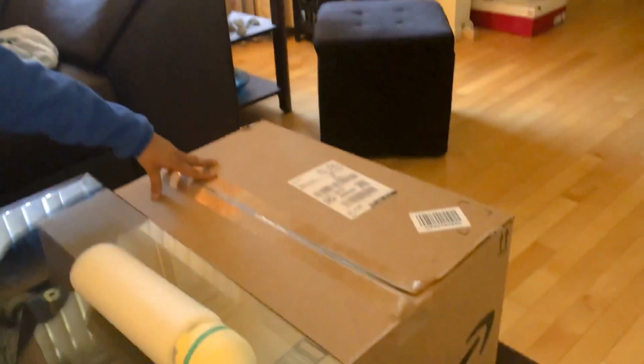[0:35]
The reason why we made this UV sterilization box is because you want to sterilize the face shields so that it's ready for use by the hospital staff or workers, and to just keep these shields generally clean by getting rid of any impurities.
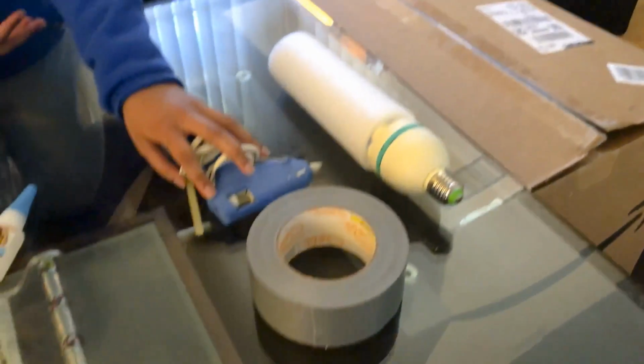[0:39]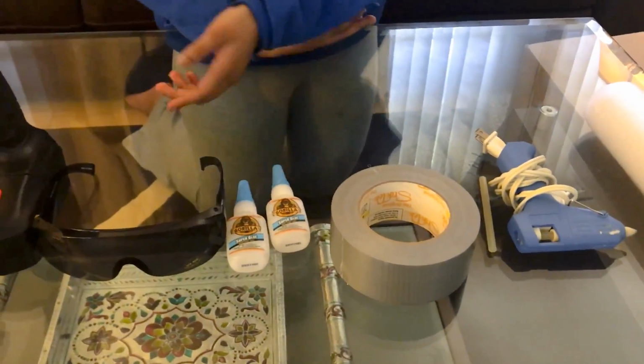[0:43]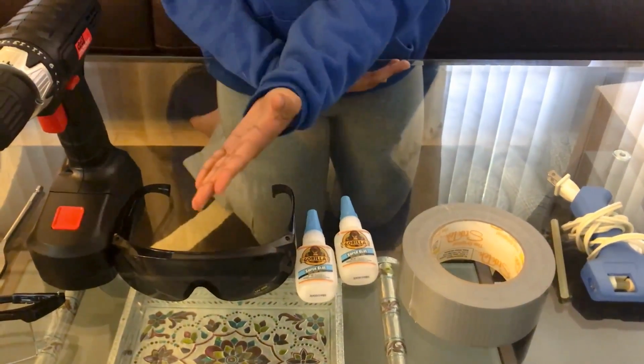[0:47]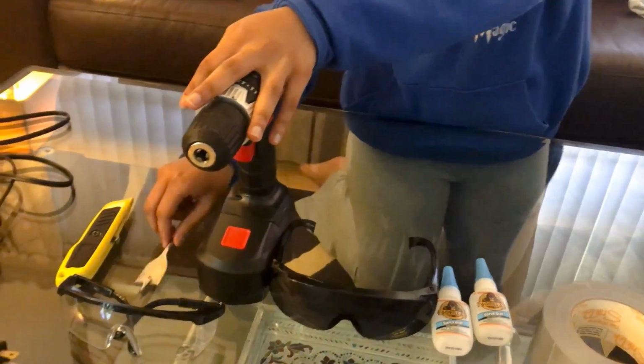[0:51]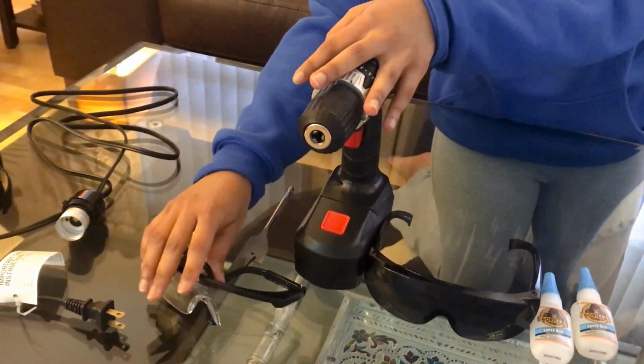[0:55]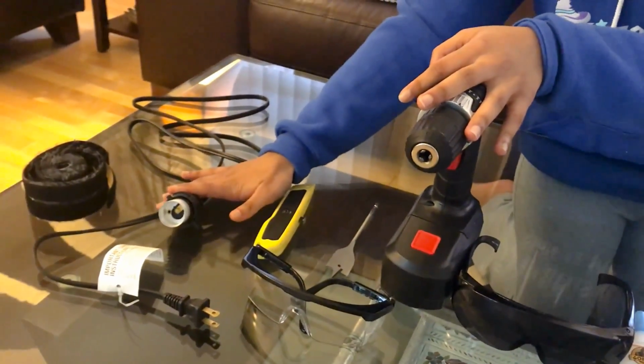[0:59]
The materials you will need for this project are a big cardboard box, a UVC germicidal lamp, a hot glue gun, duct tape, super glue or Gorilla Glue, UV glasses, because when you're working with UV light it is always important to have eye protection, a handheld drill, a 1-inch spade bit, safety glasses because you will be drilling, an X-Acto knife, a light socket to AC adapter, and Velcro.
Some important things to note here are that I am using a 15.5 inch tall, 21.5 inch long, and 18.5 inch wide cardboard box because I calculated the inner surface area of this cardboard box and divided it by the approximate surface area of each face shield plus 1 inch. This box can sterilize 16 shields at one time. If you need to do more shields at a time, then you can get a bigger box and calculate those numbers.
Additionally, the UVC germicidal lamp that I'm using has 36 watts, 253.7 nanometers of wavelength, and covers around 600 square feet. So if you need more square feet covered because you have a bigger box, then find the respective light bulb that's needed for that.
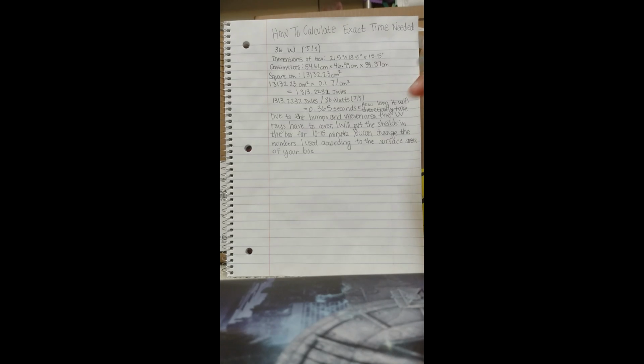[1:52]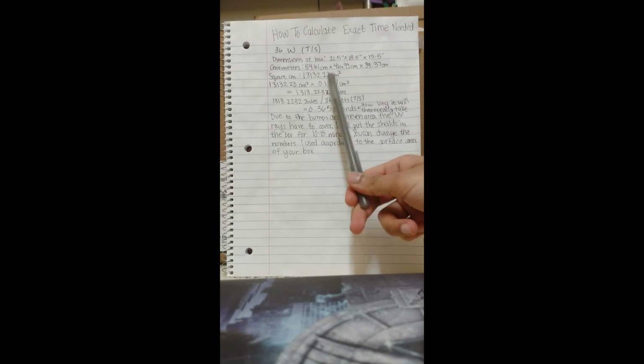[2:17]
Okay, so before we make the calculations for the exact time that we need to leave the face shields inside of the sterilization box, I'm going to go over the information that I do have. I know that my light bulb is 36 watts. I know the dimensions of my box in inches, so I converted it into centimeters, and then I found the surface area of my box, so that gives me my square centimeters.
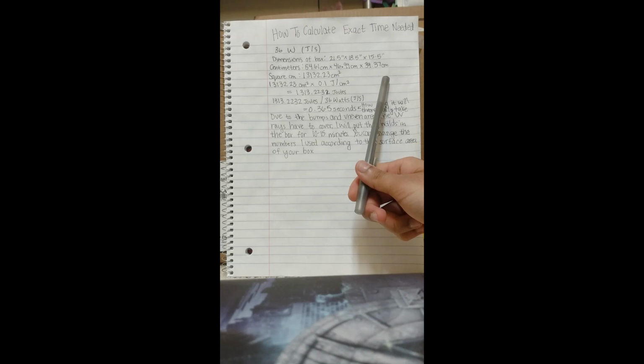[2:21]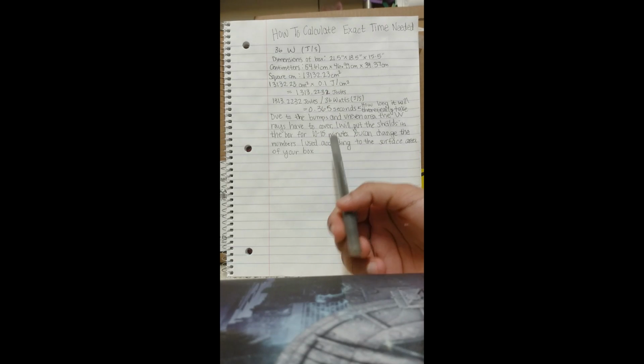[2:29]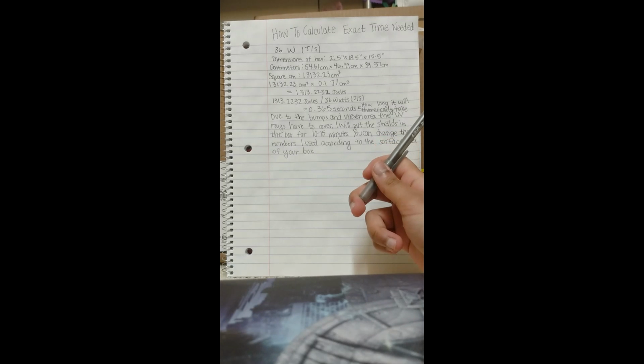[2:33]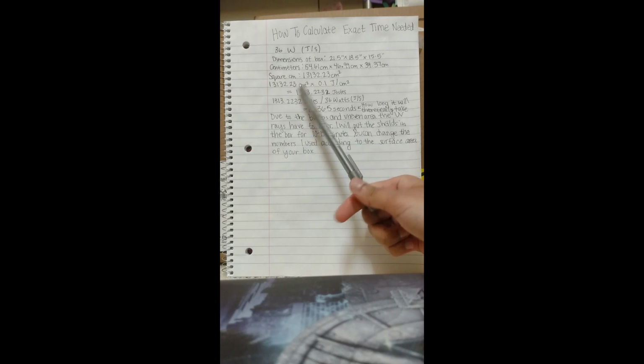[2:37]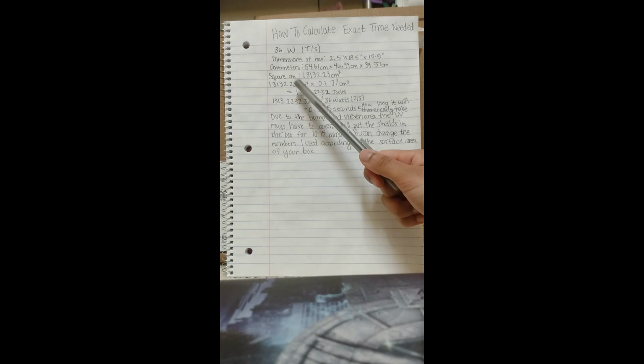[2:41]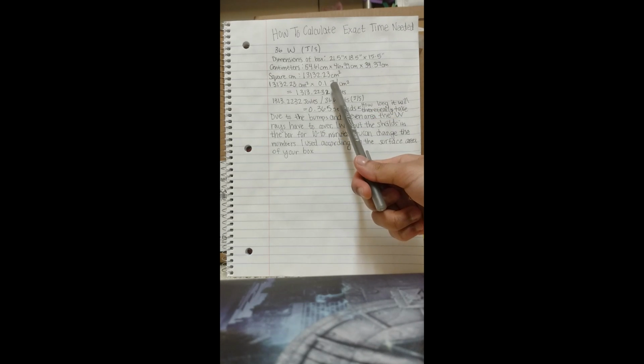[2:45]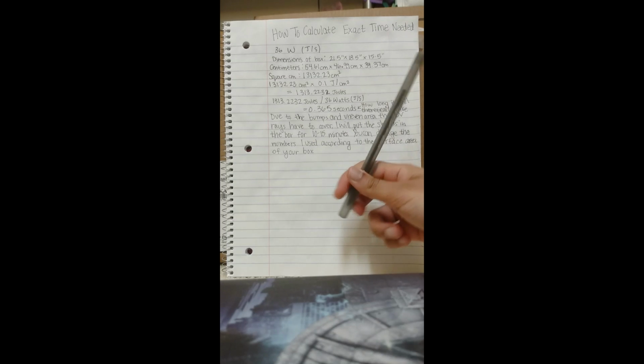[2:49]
In an article that I found, I read that you would need 0.1 joules per centimeter squared in order to get rid of any bacteria, or specifically the coronavirus, which will solve our case of getting rid of any impurities, as I mentioned earlier in the video. So in order to find out how much energy I actually need, I multiply my surface area in centimeters squared times the amount of joules per centimeter squared, and I get the total amount of energy I need.
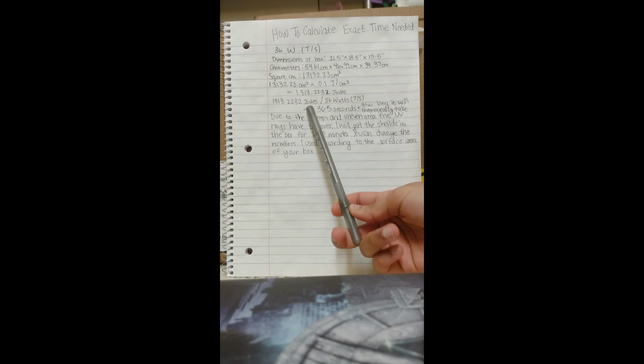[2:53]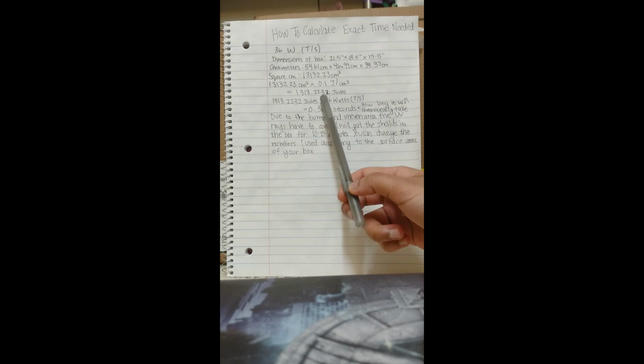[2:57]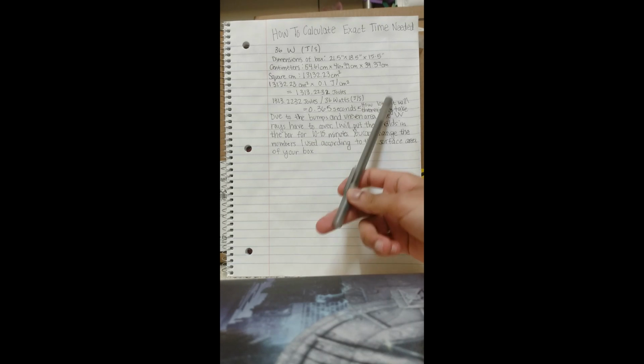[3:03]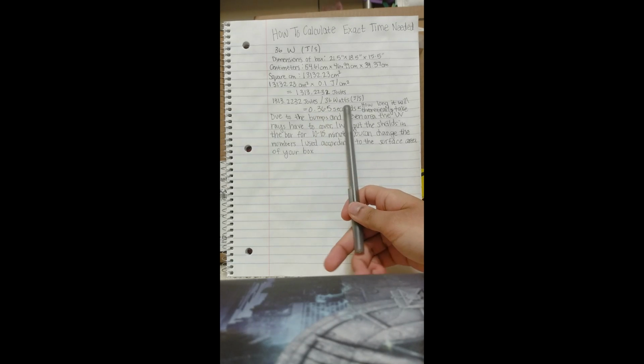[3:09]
Next, I have the total amount of energy I need in joules. I have the power my light bulb has, 36 watts, which is joules per second, which means the joules and joules cancel and give me seconds, which is the time. So doing these calculations, it means that it will take me 0.365 seconds in order for the face shields to be
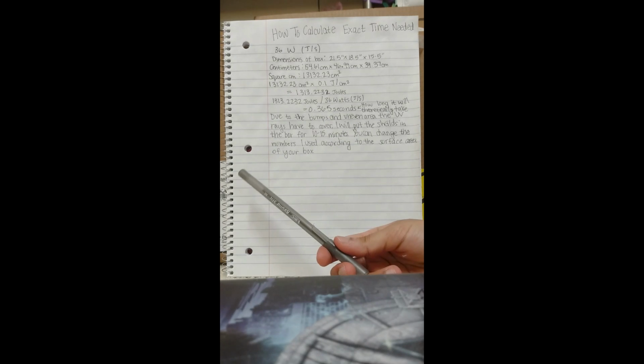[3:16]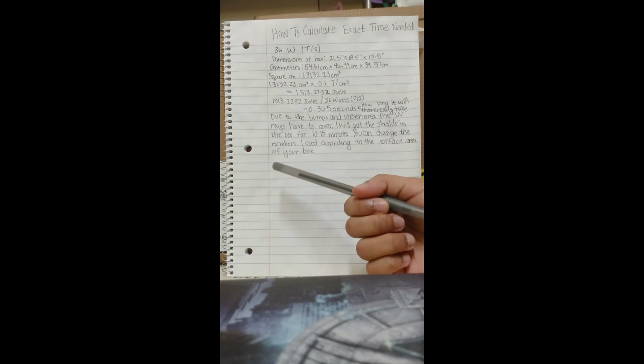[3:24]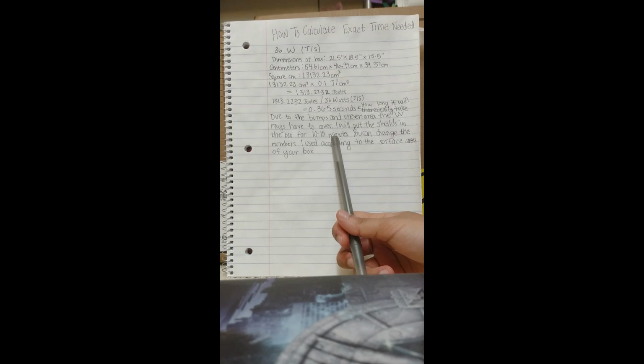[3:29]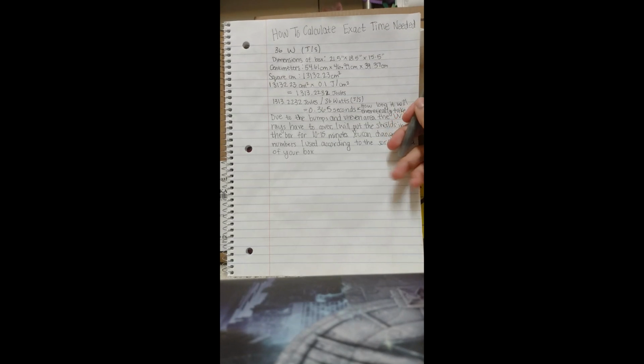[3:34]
completely sterilized. But we have to take into account all the bumps and uneven areas of the face shields, and the plane's just not even since there's 16 face shields in there that need to be taken care of. So I decided that I'd leave the face shields in there for 10 to 15 minutes. You can change the numbers, like the surface area, according to how big your box is, and just find out the exact accurate time for your scenario. But make sure to take into account the uneven area and all of those variables in your situation.
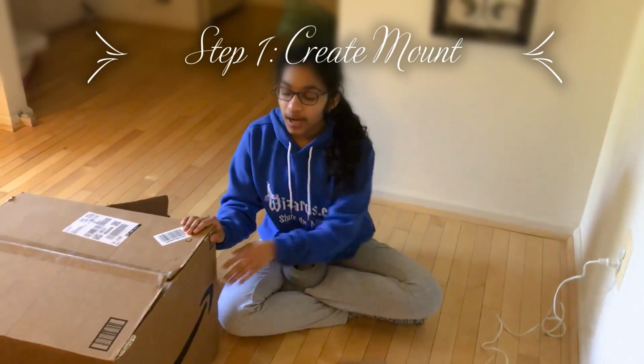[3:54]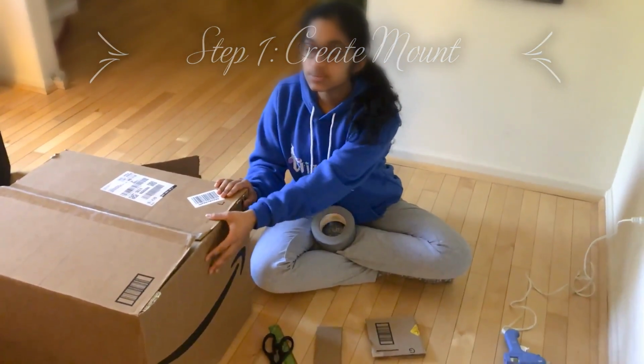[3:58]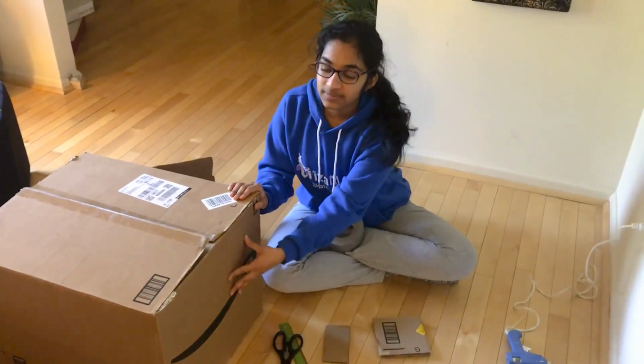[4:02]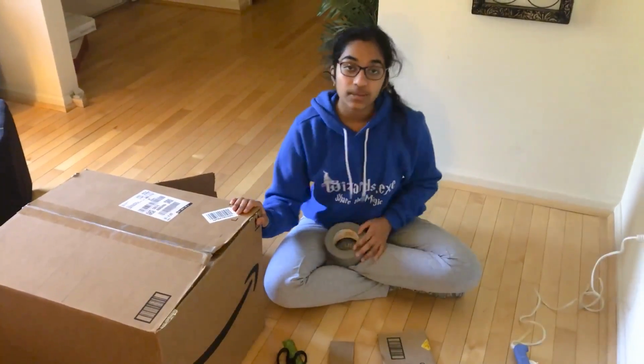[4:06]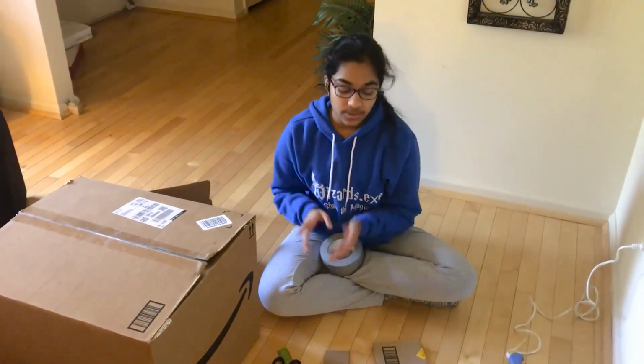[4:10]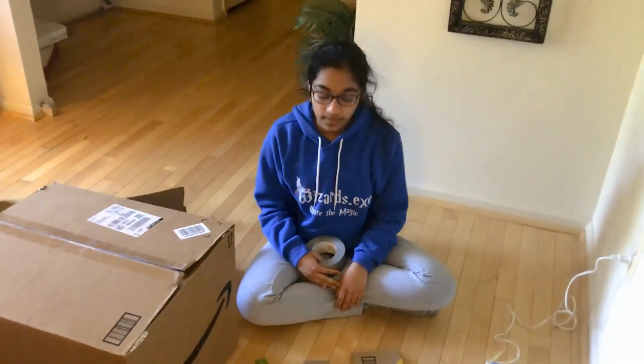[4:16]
For the first step, our goal is to make this side of the box stronger because this will be the mount for the UVC germicidal lamp, and it's kind of flimsy. So in order to make this stronger, we will be gluing pieces of cardboard together to create the buffer or wall for this mount. If you have a cardboard box or pieces of cardboard lying around, that will be particularly helpful.
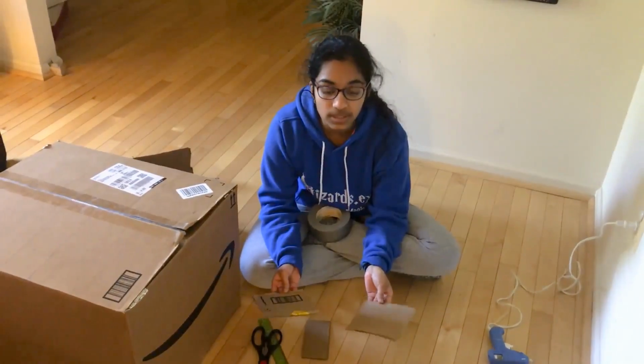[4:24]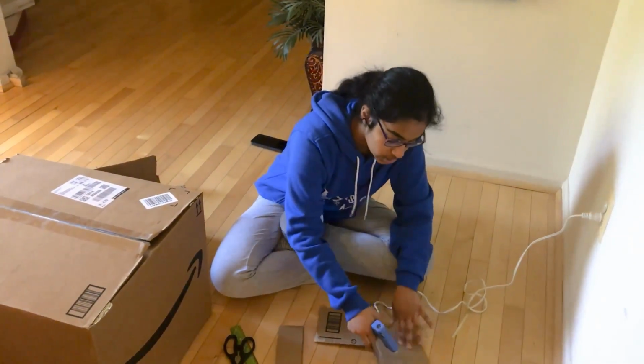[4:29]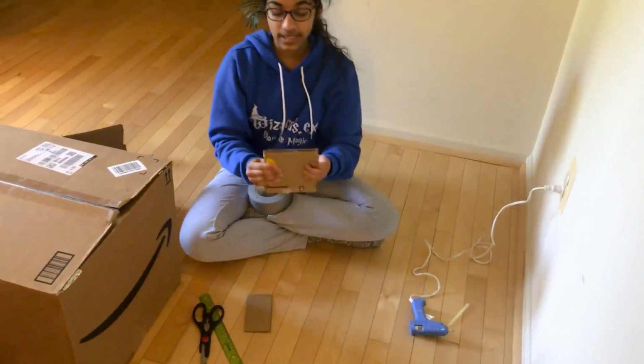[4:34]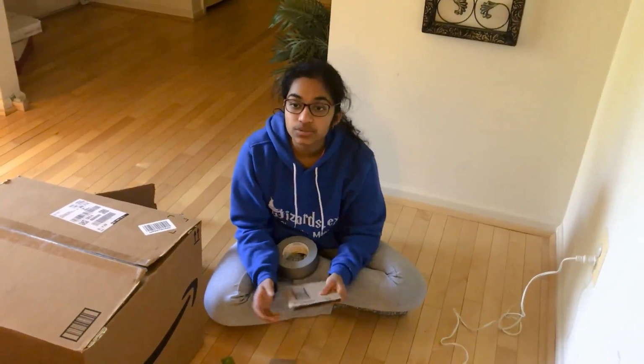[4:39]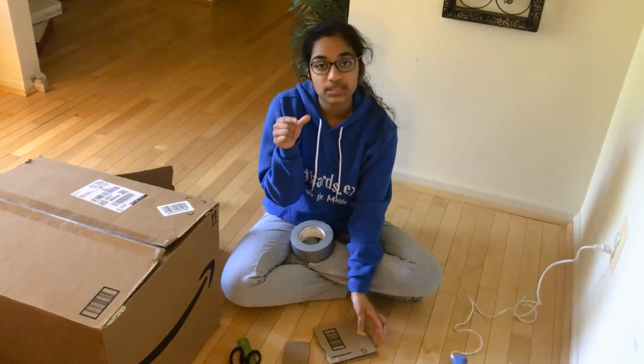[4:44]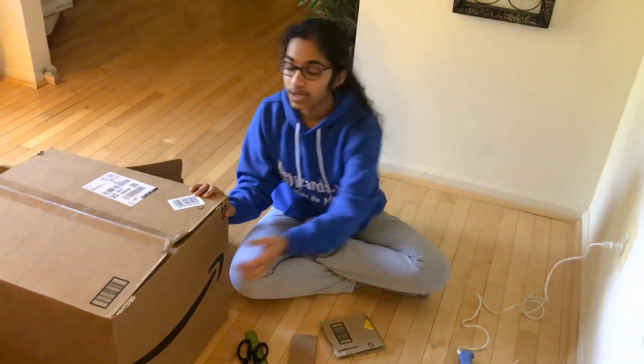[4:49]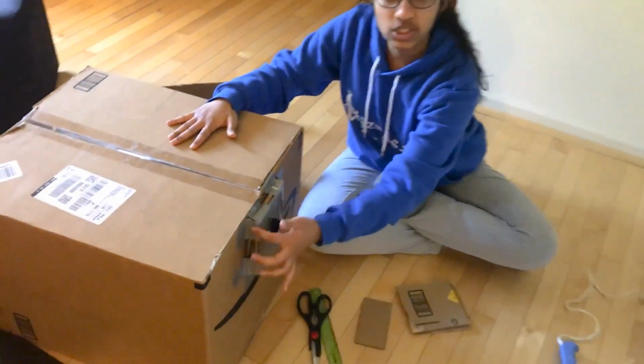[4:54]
The first step is to cut 5-inch by 5-inch squares of the cardboard, and you will need two of them. And then you hot glue these two pieces together. This is one part of your buffer slash wall. I want you to repeat this step maybe 6 or 7 times so that you get an approximately 1-inch thick wall of these pieces of cardboard stuck together. I've already done this, so it looks like this. It's about 1 inch thick.
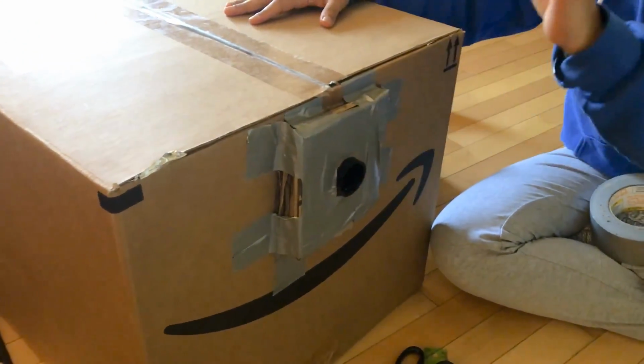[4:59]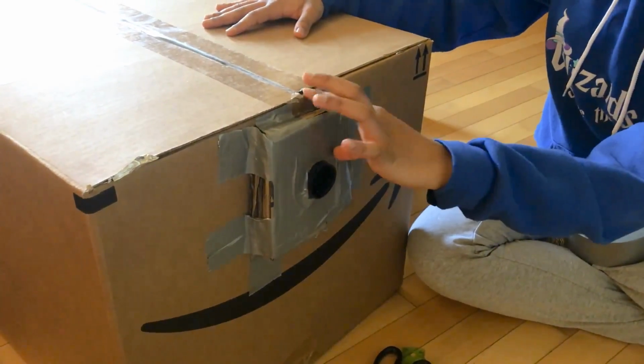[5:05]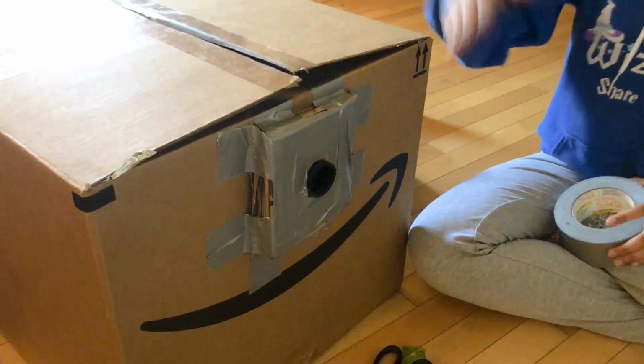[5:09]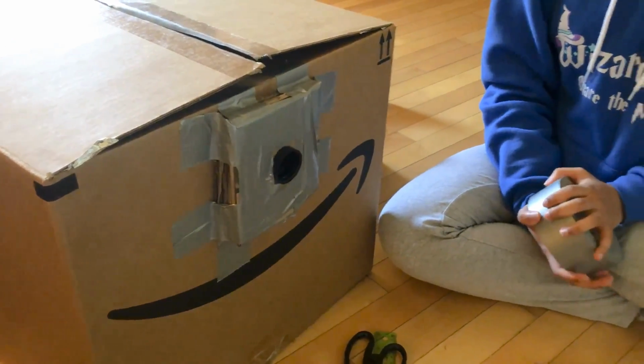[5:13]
And when you're done with that, glue the wall or bundle of cardboard onto the cardboard box at about 2 inches away from the top of the box. And then take duct tape, 2 pieces horizontally and 2 pieces vertically, to ensure that it will stick on this box so that it'll be ready for step 2.
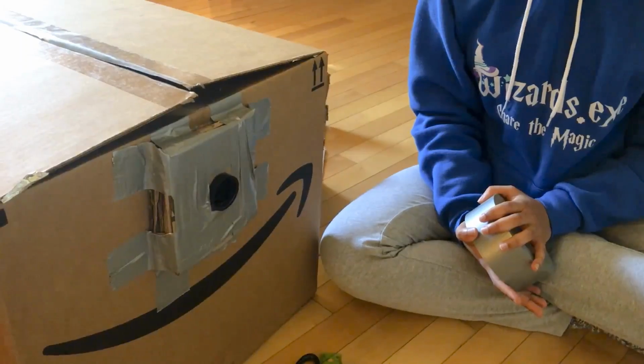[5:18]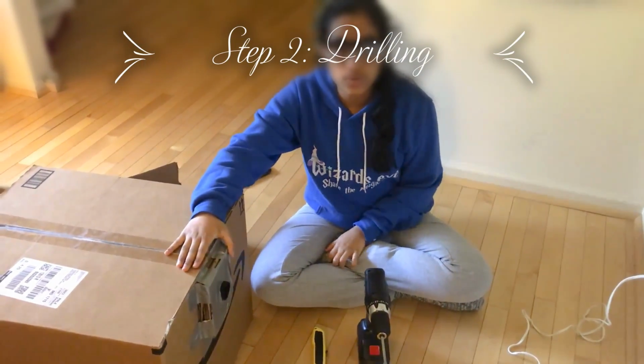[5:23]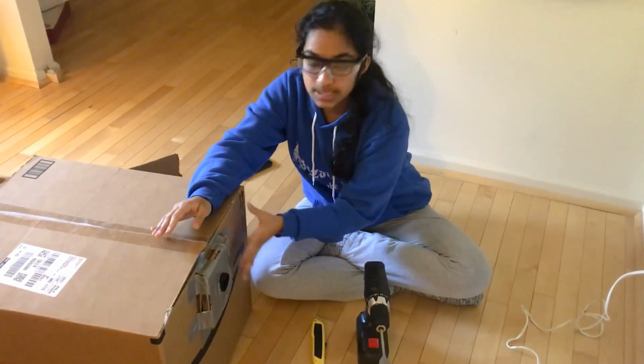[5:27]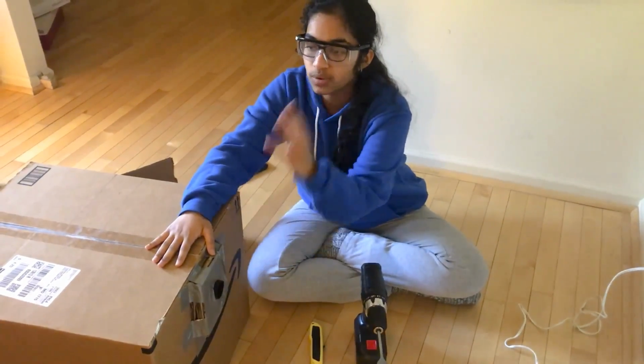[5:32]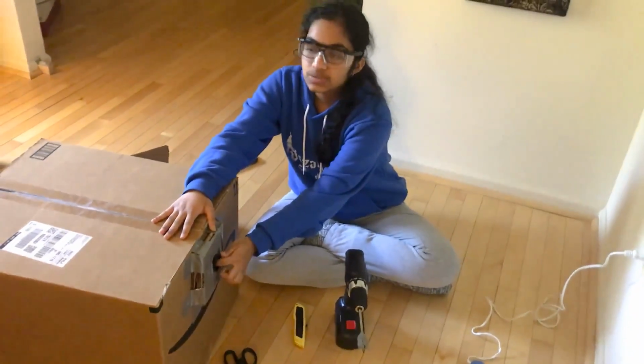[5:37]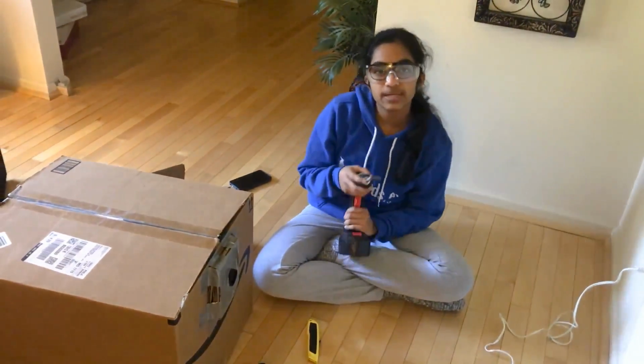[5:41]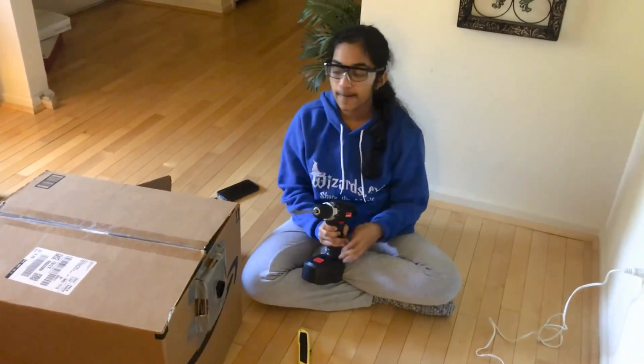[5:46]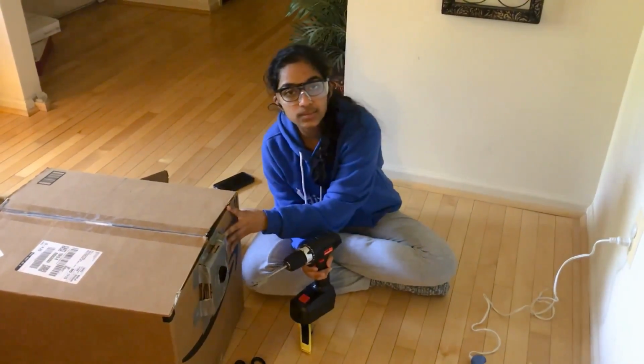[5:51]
Okay, so for this next step, we will be drilling a hole through all of the cardboard wall that you built and this wall of the cardboard box, because this will essentially give you the hole where you will be putting the cover of the light bulb adapter into, and this will basically be the mount for your light bulb. So you need to put your safety bit into your drill. Do not forget to wear your safety goggles, that's very important. And then you drill a hole into the cardboard and the wall of the cardboard box.
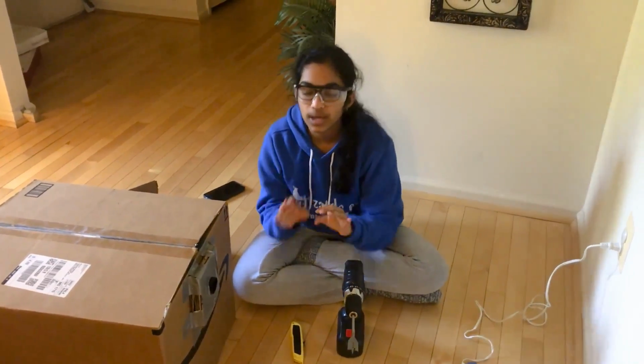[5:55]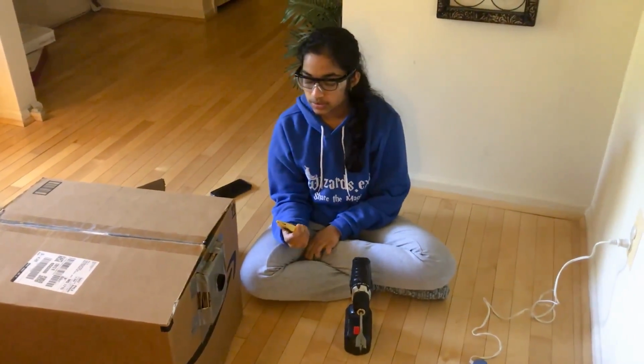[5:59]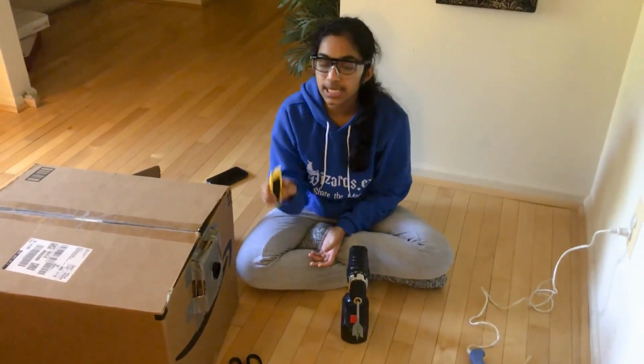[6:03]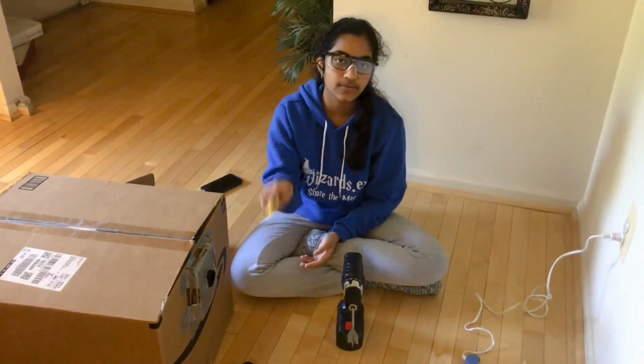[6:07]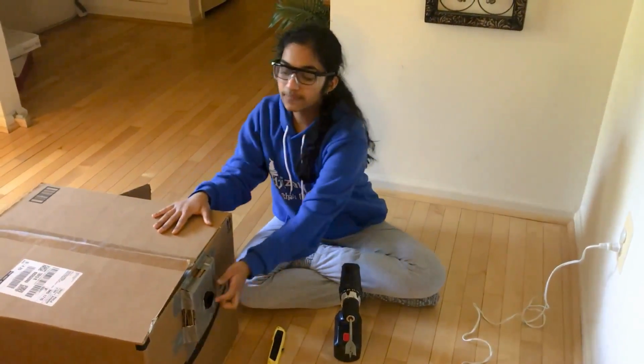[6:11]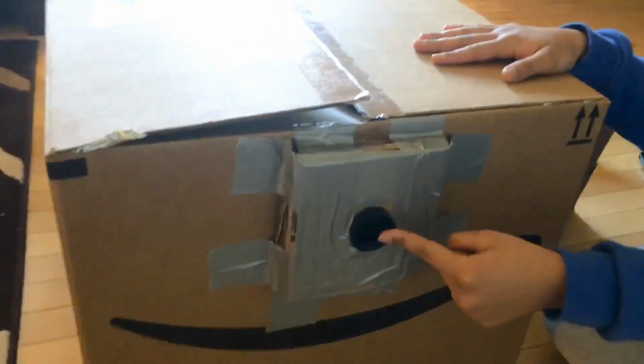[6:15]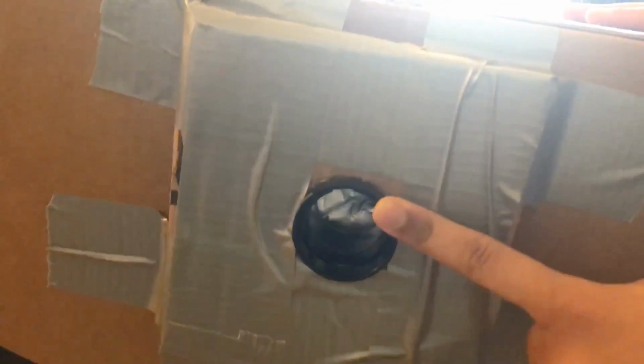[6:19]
It took me about half an hour to get a good size hole. And then you can use an X-Acto knife, or if you have a file, that would be better, to shave away at the outer edges of the circle that you drilled, because you want the cover of that light bulb adapter to fit snugly into the circle, as I have done here already. So I will see you in the next step once you've accomplished this.
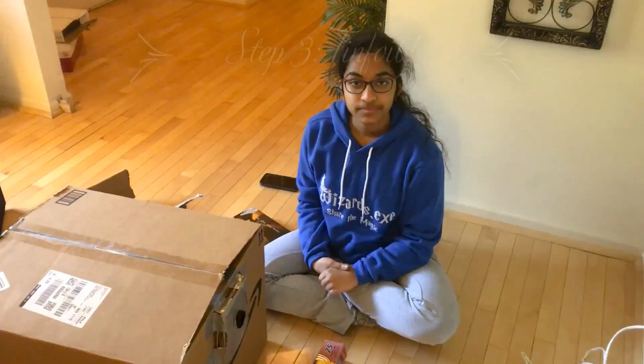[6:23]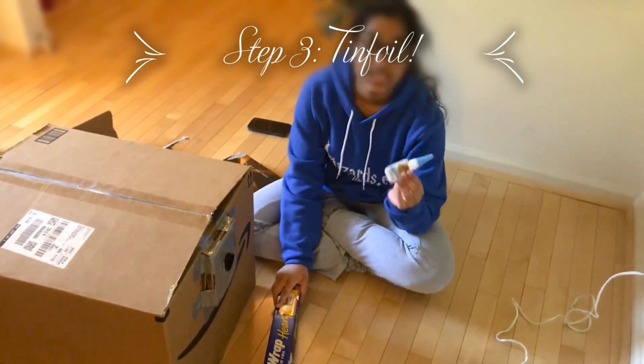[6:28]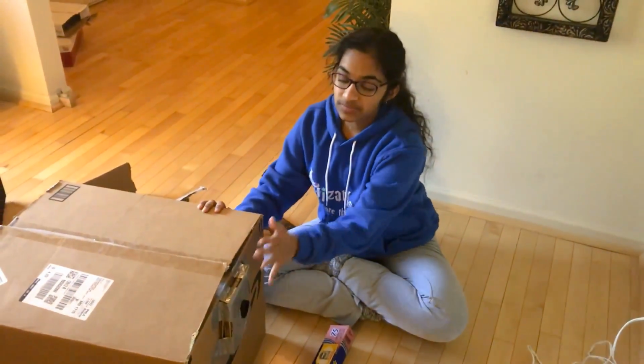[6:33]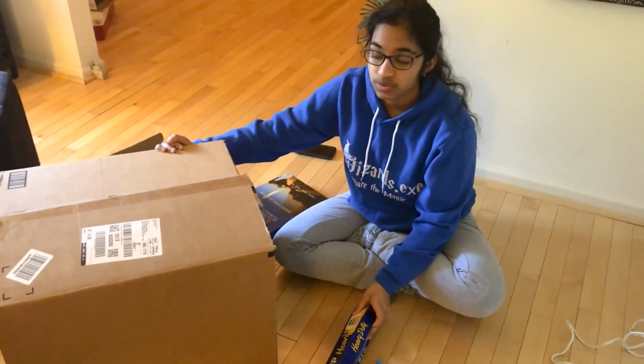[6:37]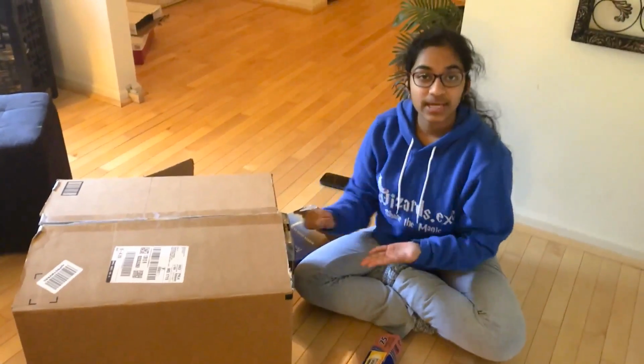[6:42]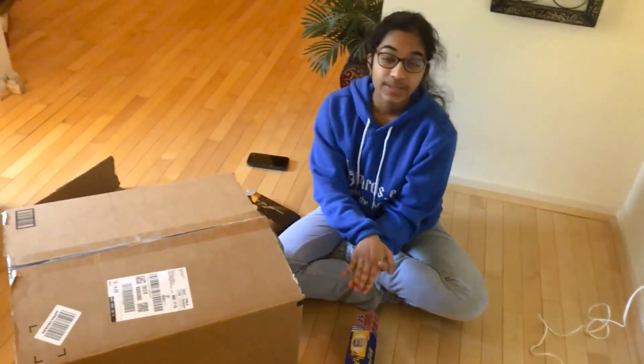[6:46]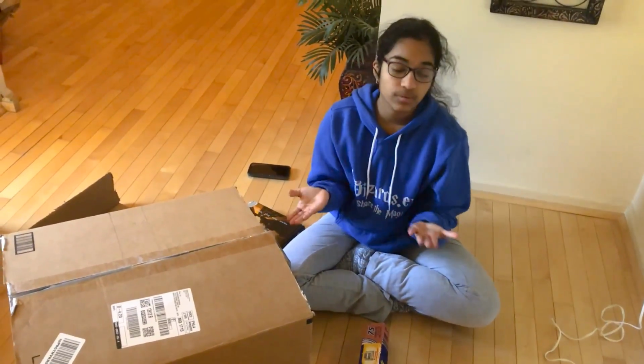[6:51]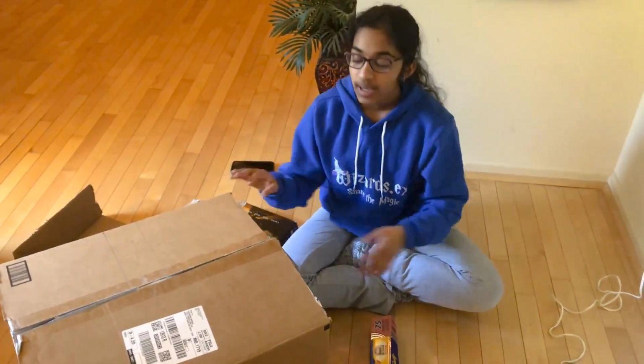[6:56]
Okay, so for this step, you will be needing tin foil and super glue. What you want to do is measure each of these sides and cut the respective length of tin foil that you need. And then using super glue, make sure to put even layers so that when you put the textbook on to ensure that the tin foil will stick, it doesn't have weird bumps on it. Then the reflection of the light from the UV lamp will work a lot better.
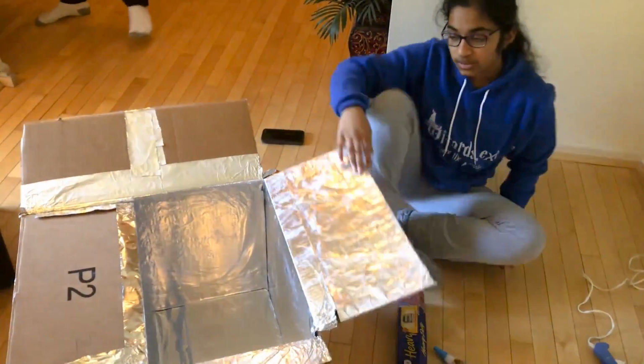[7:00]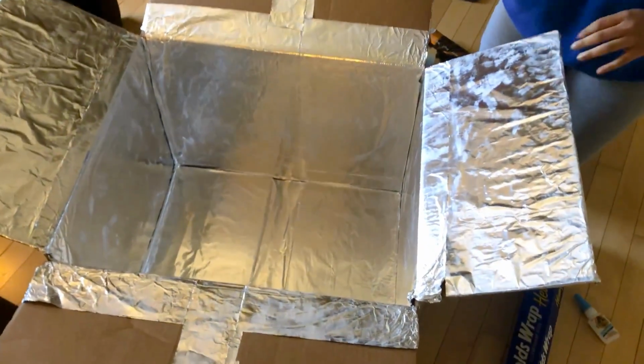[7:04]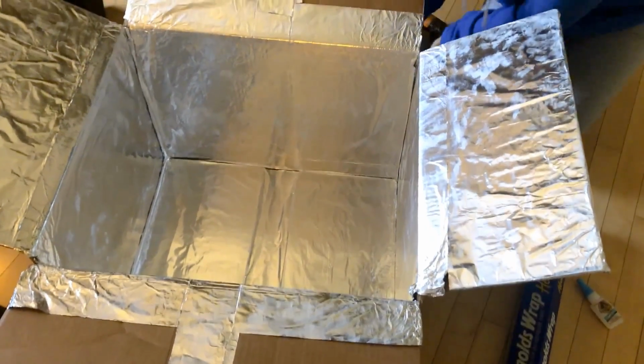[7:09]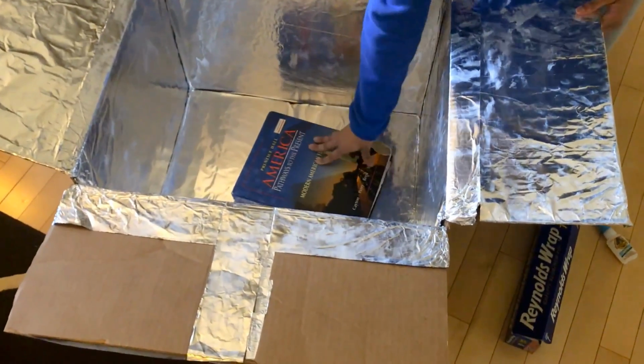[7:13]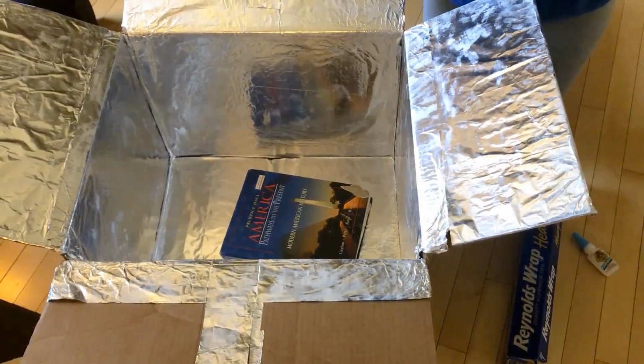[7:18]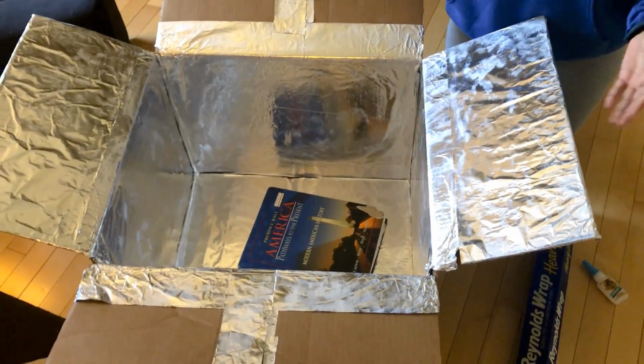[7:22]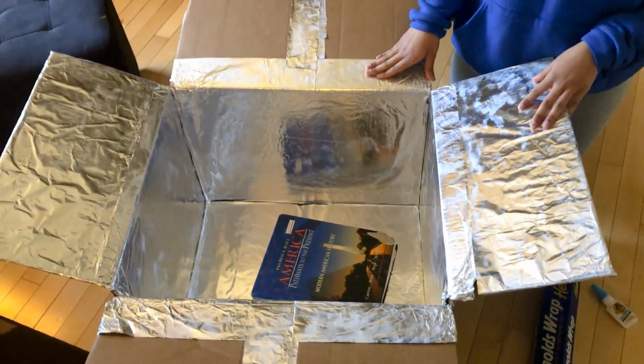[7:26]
So after you've done that, I've actually completed the whole box. This process took me about 90 minutes to do, but once you stick the tin foil down with super glue, you want to put a textbook on it for about 5 minutes to ensure that the glue and the tin foil will actually stick onto the cardboard box really well. Do this process every single time.
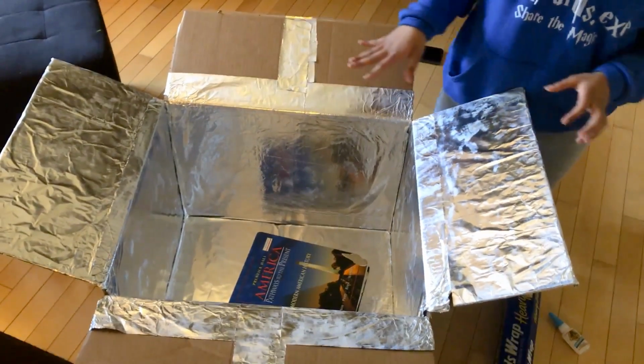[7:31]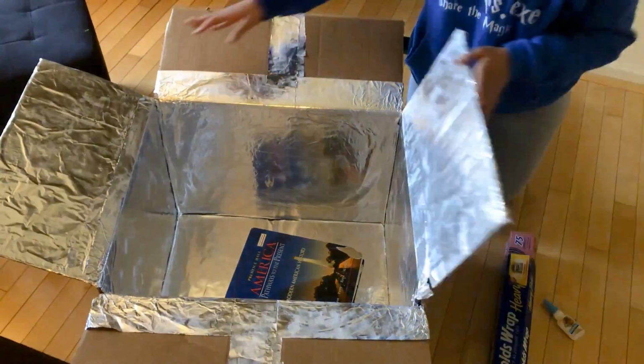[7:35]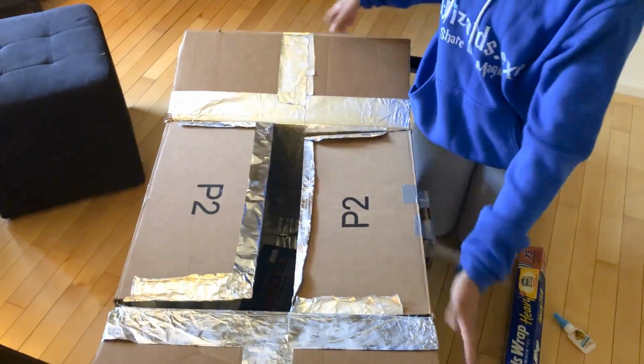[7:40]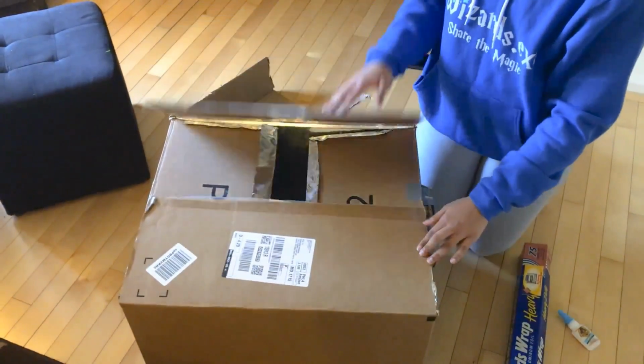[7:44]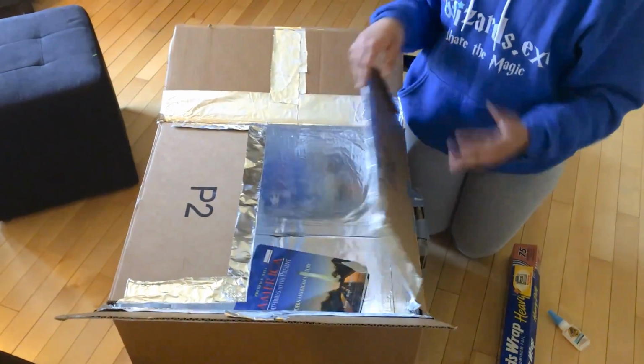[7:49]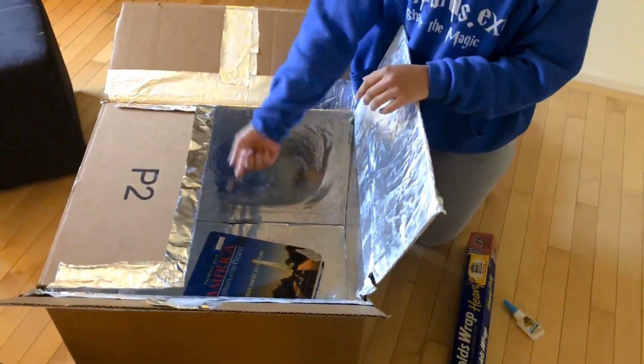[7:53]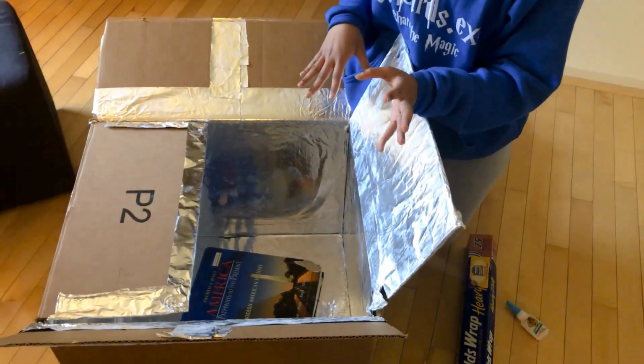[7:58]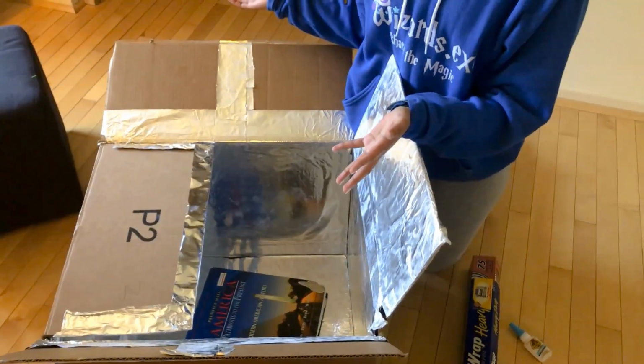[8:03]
You want to glue the tin foil onto the panels of the cardboard box. The reason why I only did some of this panel was because when I close this, the parts that are already being reflected are up here, and there is only this little gap left here, which is why I only put tin foil there. To make sure that you've covered all the areas that need tin foil reflection, you can put your phone with the camera faced up, so you can check, okay, is everything covered with tin foil in this area? And if it is, then you're good to go for the next step.
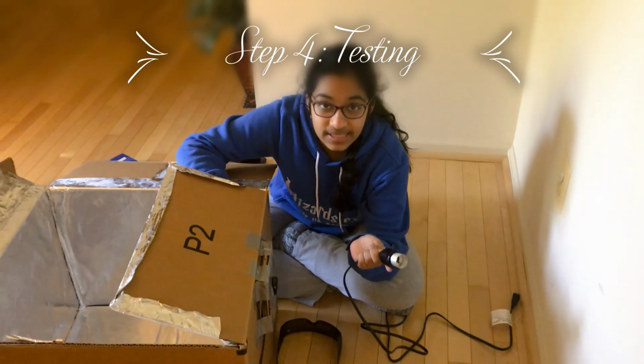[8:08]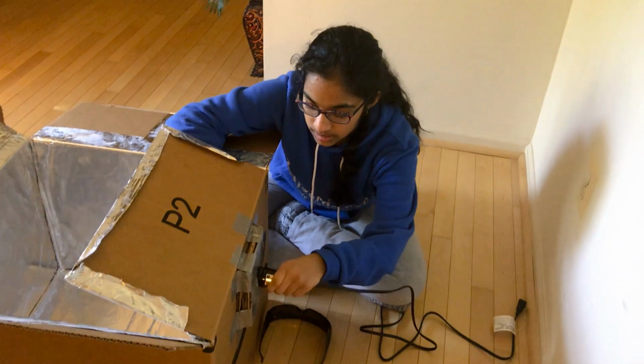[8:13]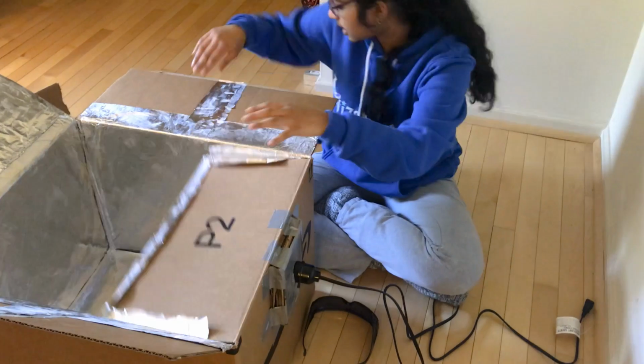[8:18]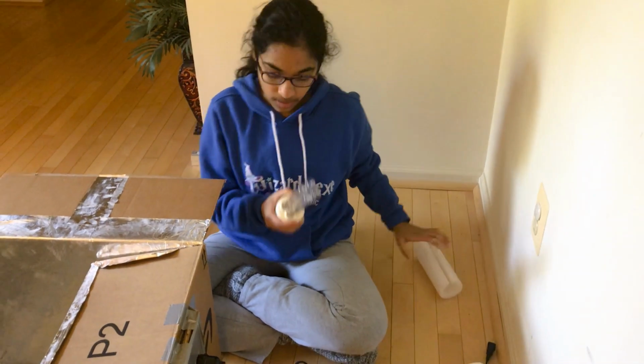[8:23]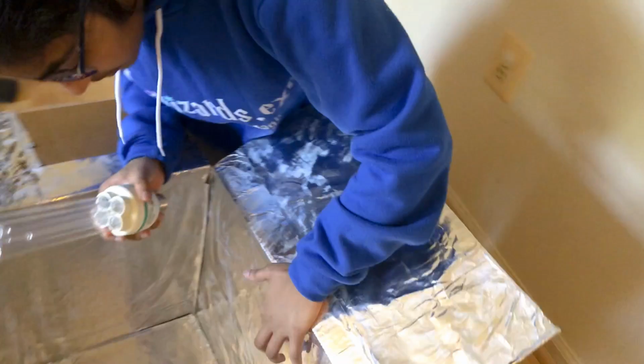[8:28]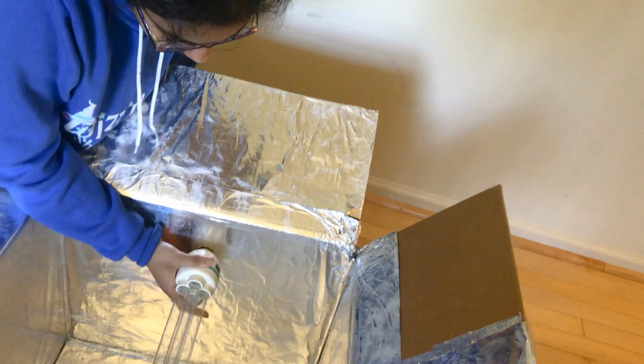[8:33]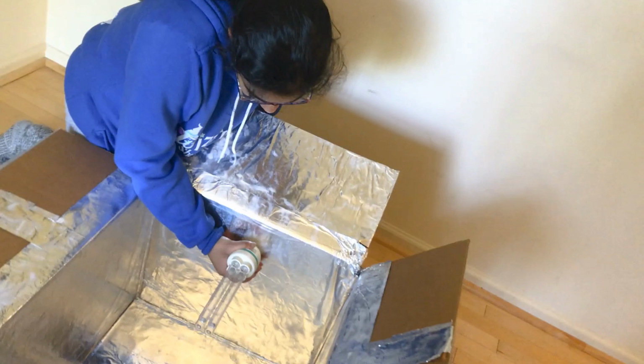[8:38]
Okay, so for step 4, we will be actually testing the light and seeing if it works in here. So you need to screw this in. Okay, now that that's in pretty tight, this is the lamp, and take the styrofoam off. And then screw, you have to make the hole in here. And then hold the other end so that it doesn't move while you screw this in as well. Okay, so now that that's in pretty tight,
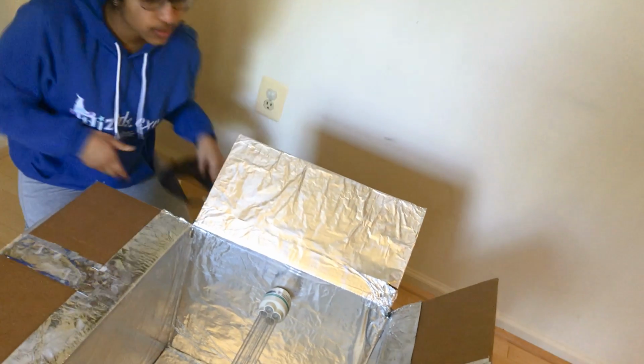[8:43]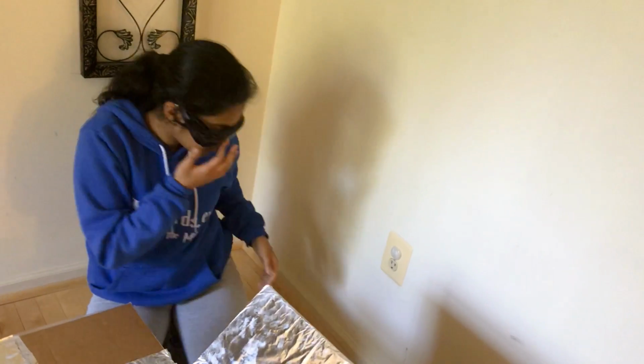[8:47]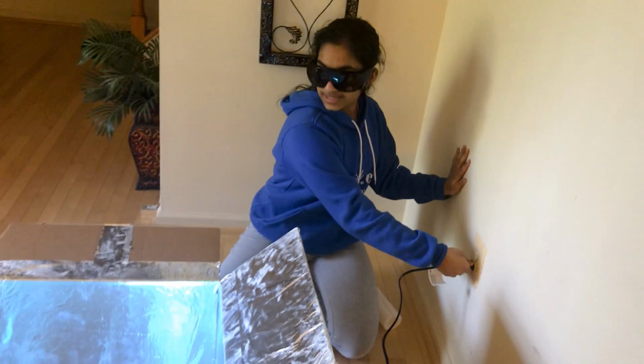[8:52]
don't forget your UV glasses. Don't want to hurt your eyes. They're kind of big for me. But then let's plug it in, and yay, it works!
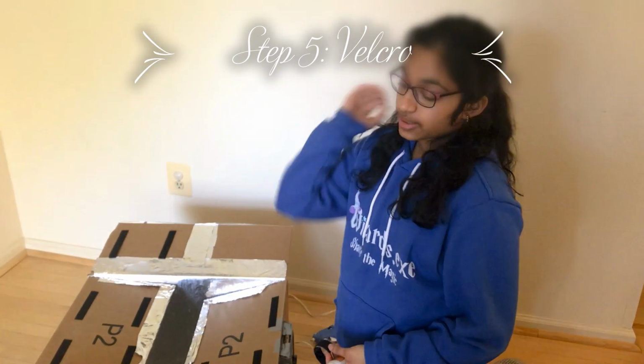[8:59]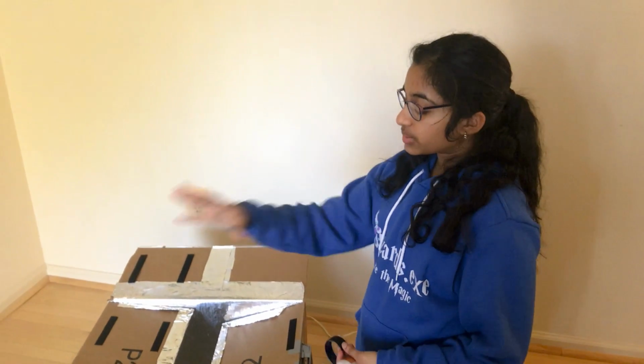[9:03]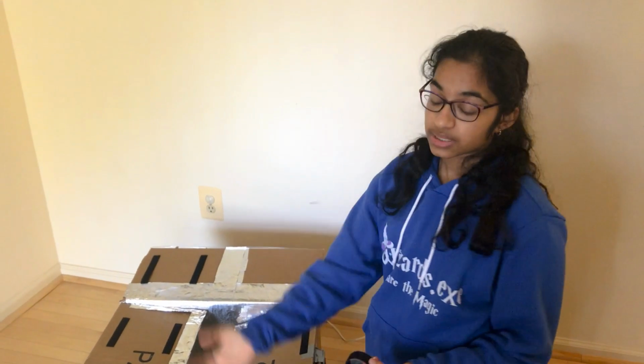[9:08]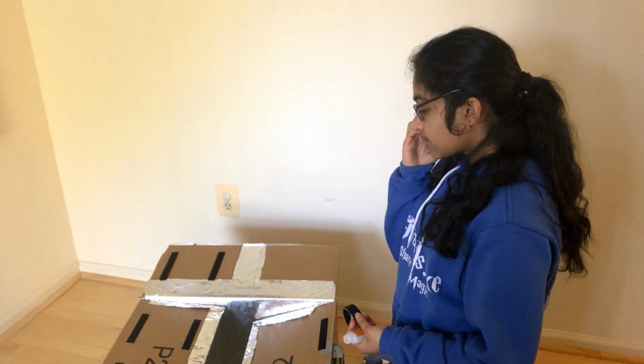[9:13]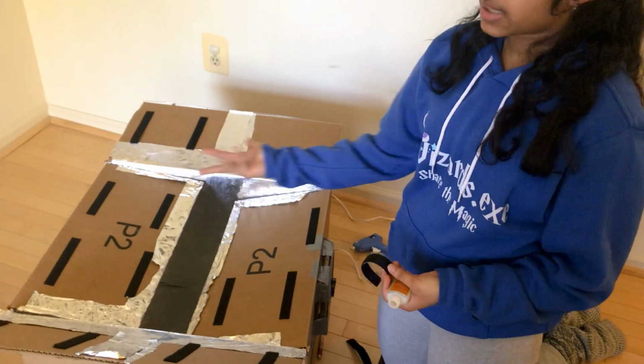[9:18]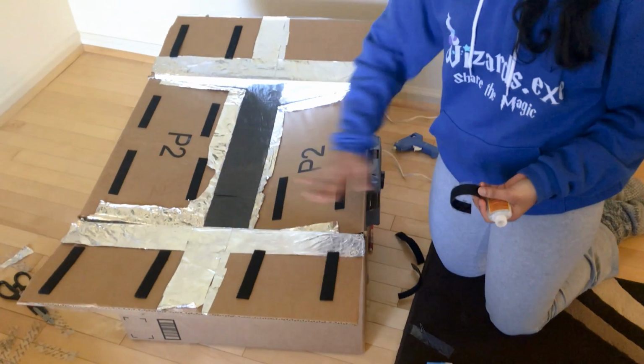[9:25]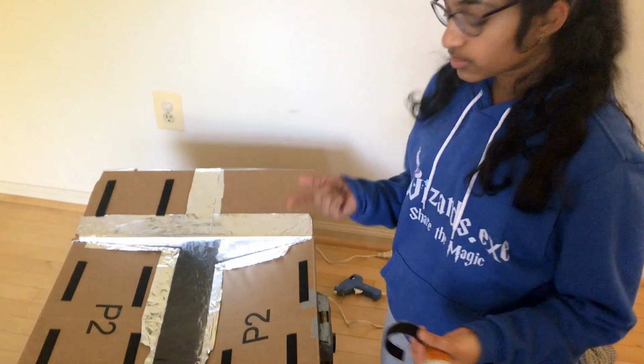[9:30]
Okay. So for the last step, it's putting the Velcro on the box so that when you close it, there is no open space, and there's no way for the UV rays to get distracted and go somewhere else. It'll get reflected straight onto the tin foil. So in order to do that, I have cut about 5-inch Velcro pieces on both the soft side and the scratchy side. And so I've done this panel, as you can see. I've done 4 on each side, and I will do the last 3 strips that I have to do.
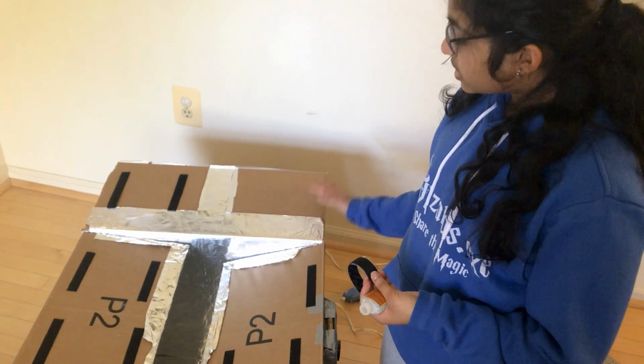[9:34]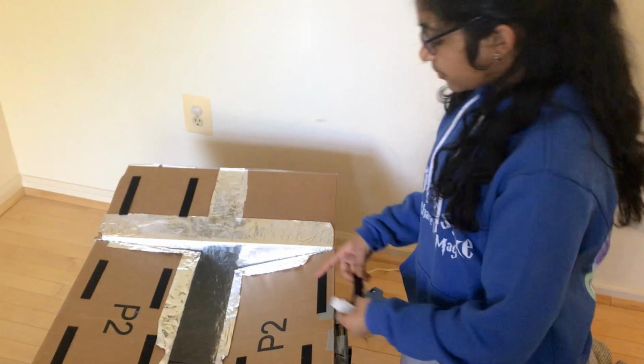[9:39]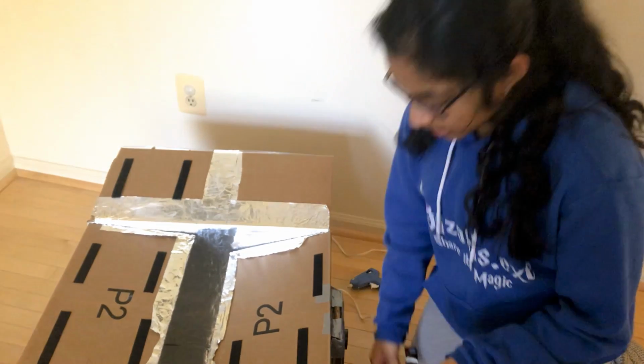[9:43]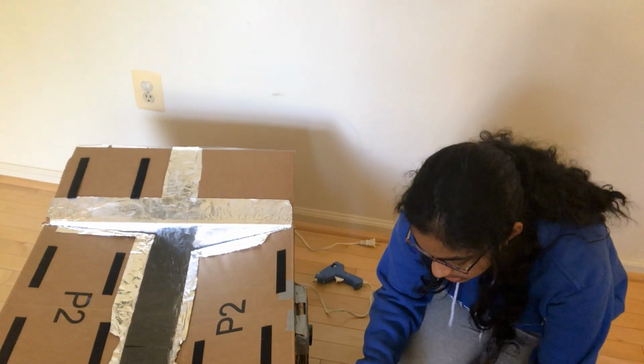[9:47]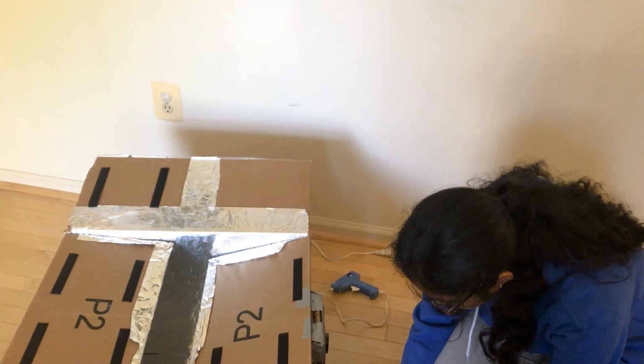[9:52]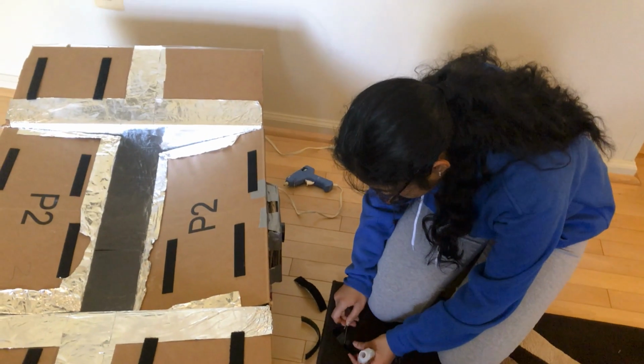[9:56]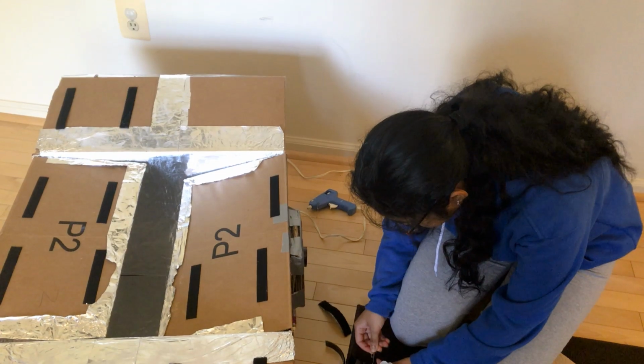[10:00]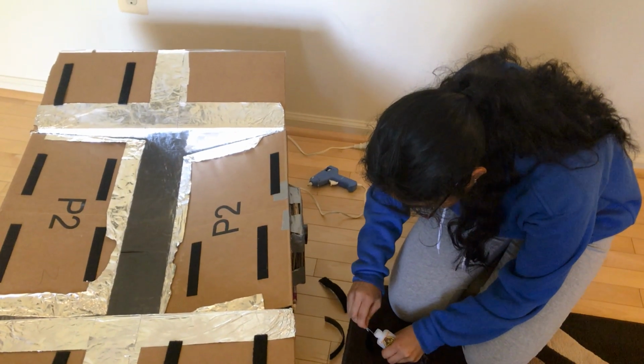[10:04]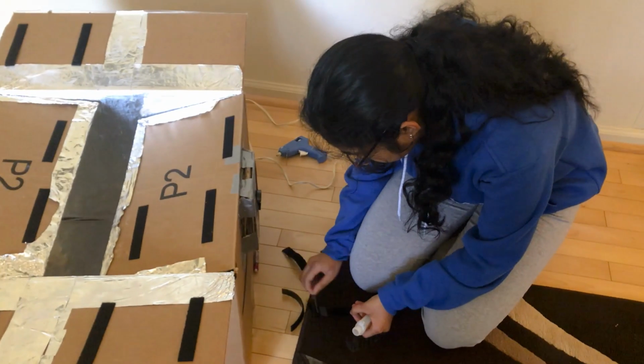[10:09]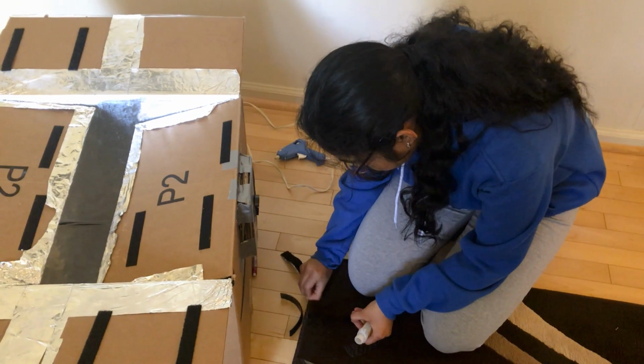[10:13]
I've already measured so that it doesn't go on the tin foil, because it doesn't stick that well if it is on the tin foil. I've done this, and to help it stick a little bit more on the rough side, I'm putting some super glue, just a little bit, to make sure that it actually sticks when I close the box. And it doesn't come up with the soft side. I have to use a paper clip because this glue is kind of slow coming out. Okay, and if I do have to use it for the soft side, I will.
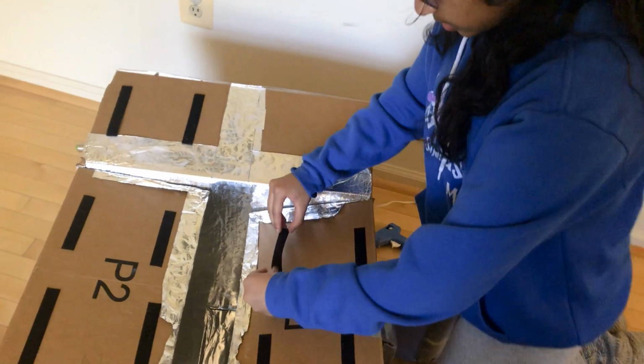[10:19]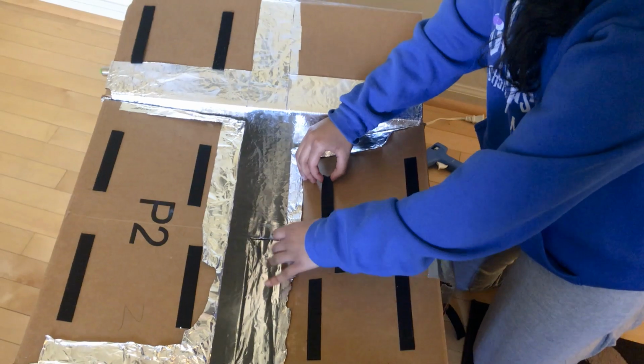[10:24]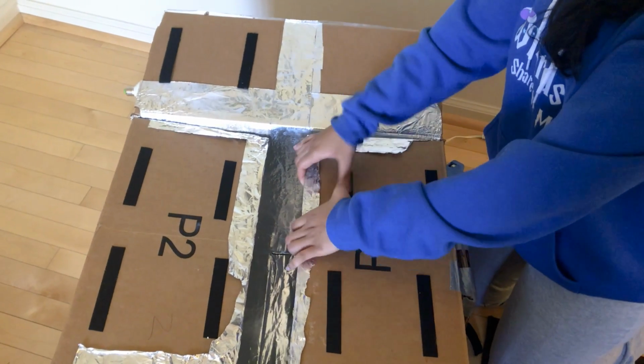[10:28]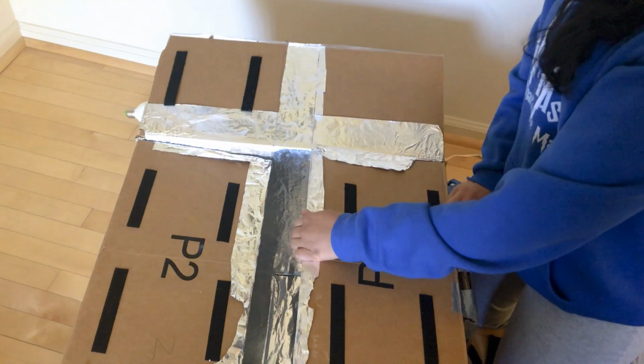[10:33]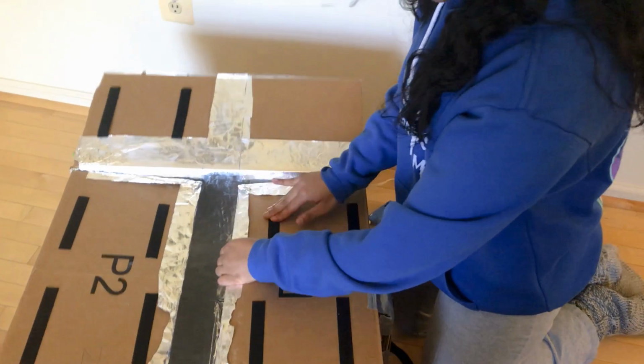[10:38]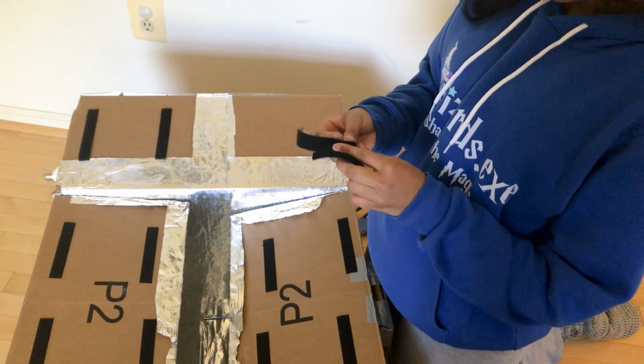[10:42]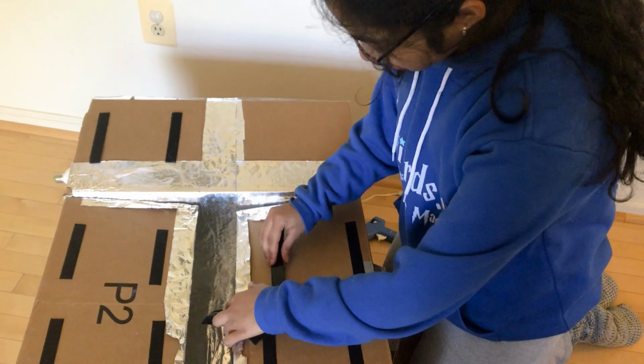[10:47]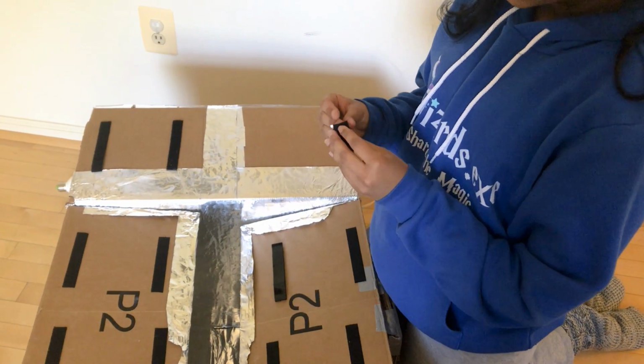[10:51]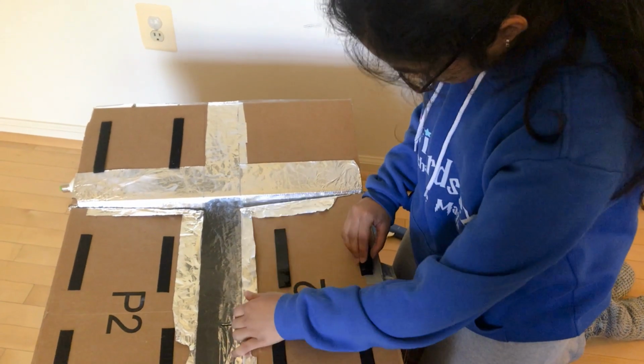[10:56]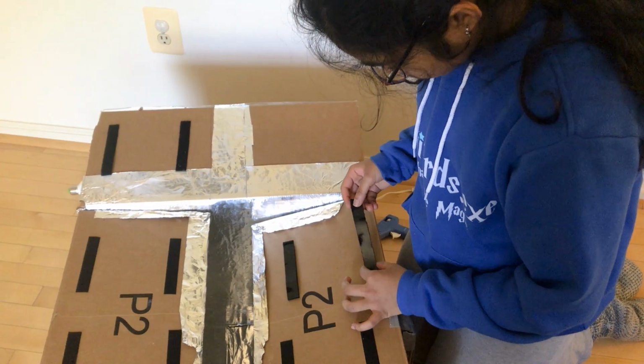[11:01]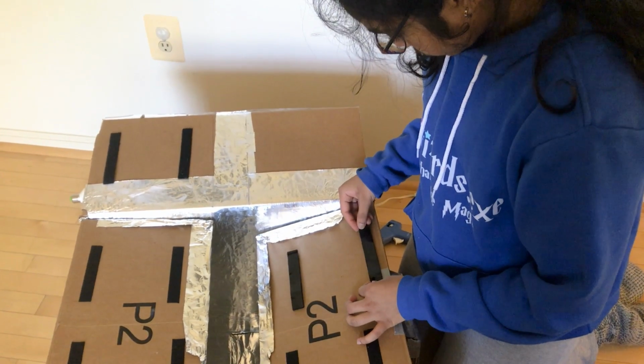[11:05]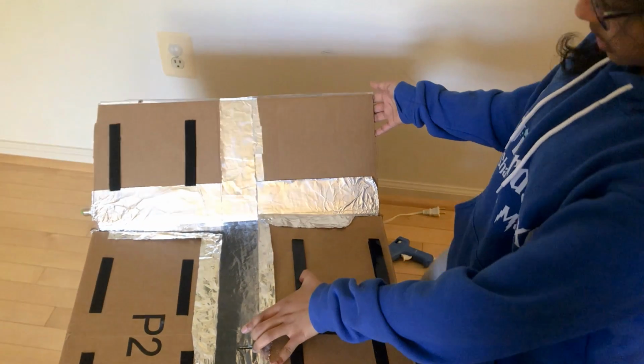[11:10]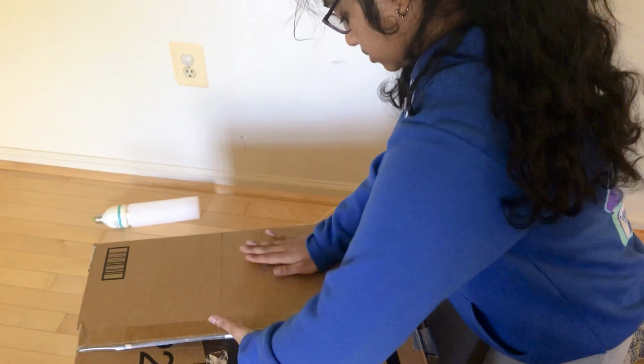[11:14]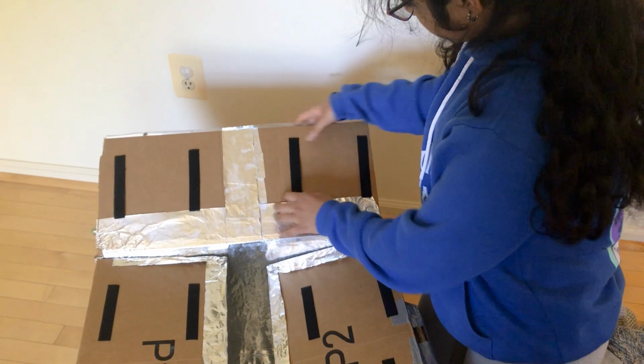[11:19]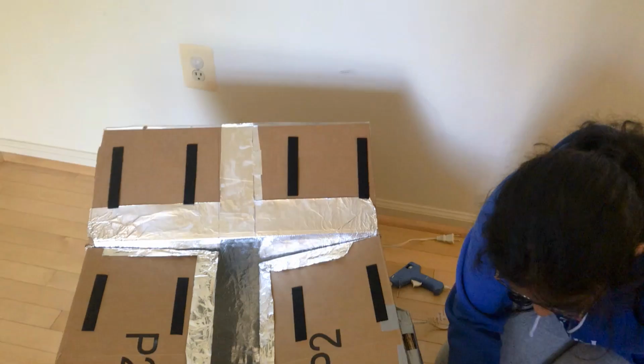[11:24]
And then you put it at approximately the same place as the other one. Put one side down. And then you want to press it so that the glue can stick on the board. Okay, and now so that I don't have to re-measure it, it's time to put the soft side on here. And then hopefully when I close this, I don't have to put super glue. There we go. So that one stuck pretty well. I just have to put a little bit of super glue on the other side.
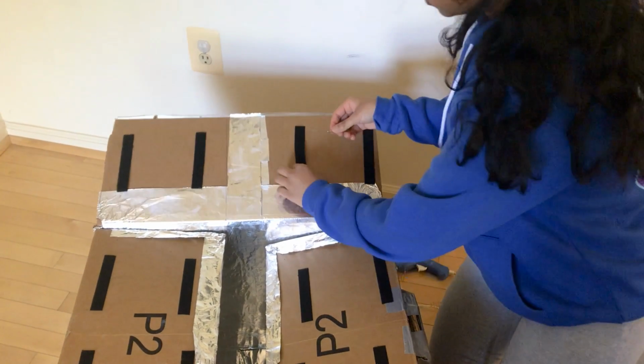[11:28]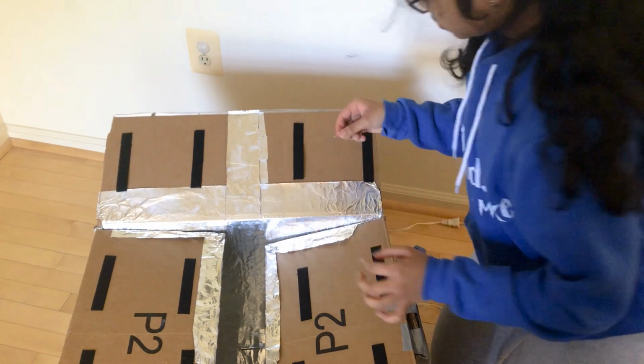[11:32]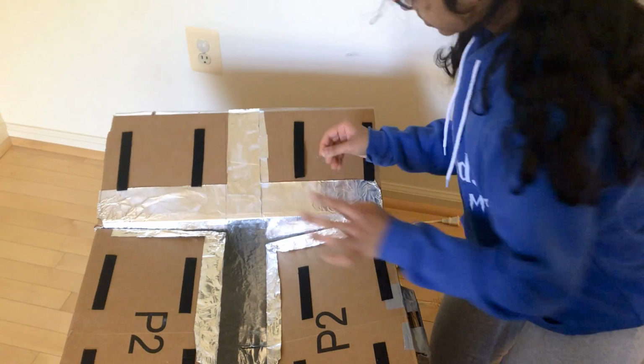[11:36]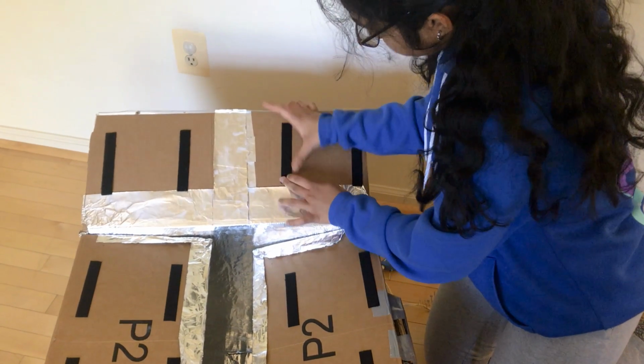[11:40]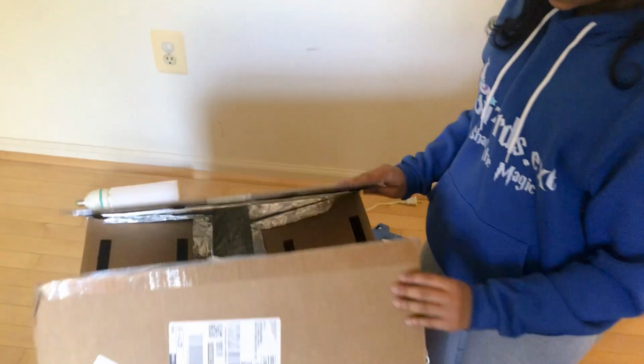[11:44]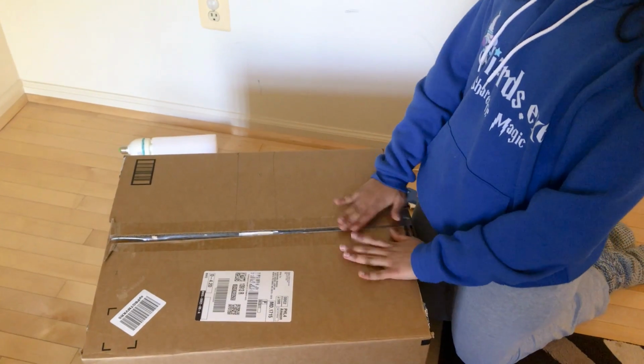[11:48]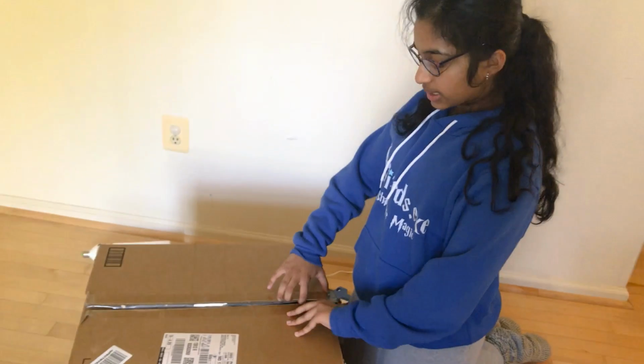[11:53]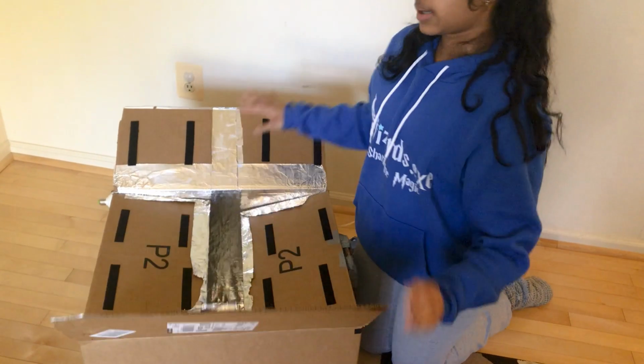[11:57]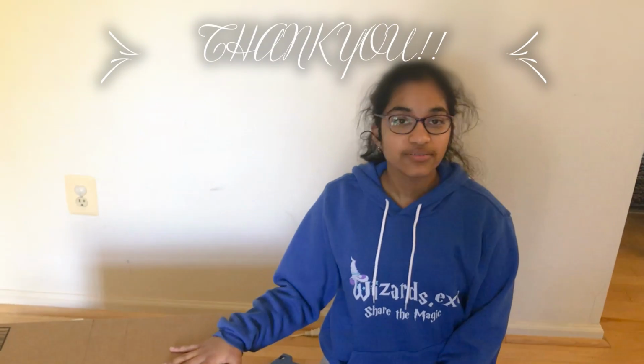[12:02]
Okay, so let's close the whole thing. So now it's all closed. There's no way the UV light bulb will get distracted and emit rays somewhere else. So that opens up like that. That opens like that, and we're done. This is the final product.